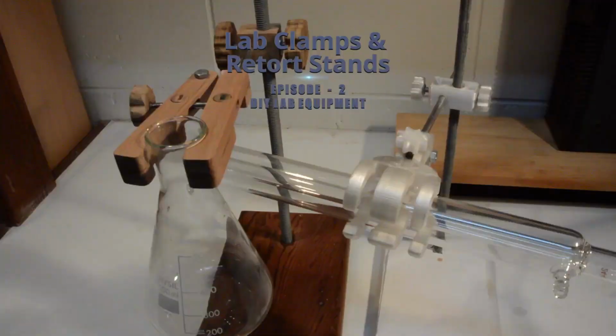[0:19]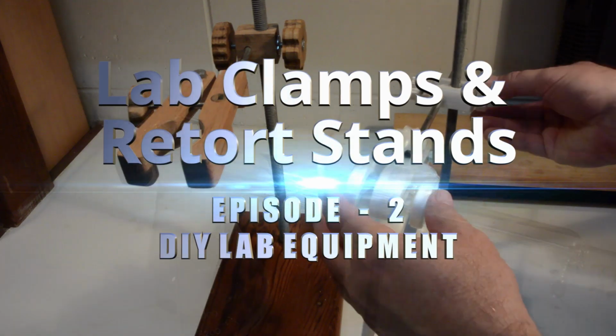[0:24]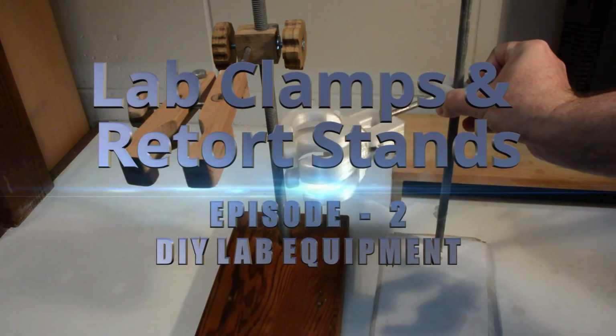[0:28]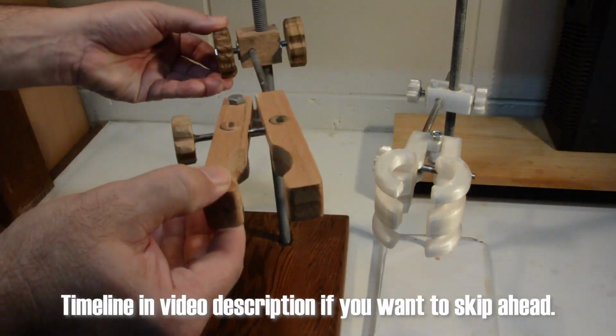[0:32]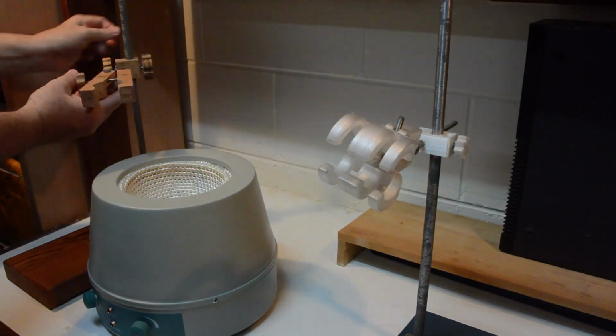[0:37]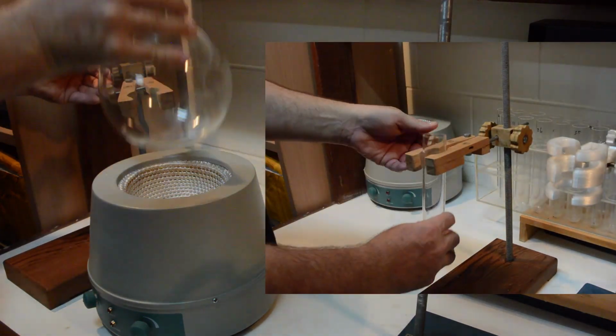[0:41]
Welcome to episode 2 of a series about DIY equipment for home chemistry labs, which is designing and making retort stands with boss heads and clamps, including both 3D printed and wooden versions. Retort stands and clamps are crucial pieces of equipment when doing procedures such as distillations, or in general for holding glassware in place while performing chemical reactions.
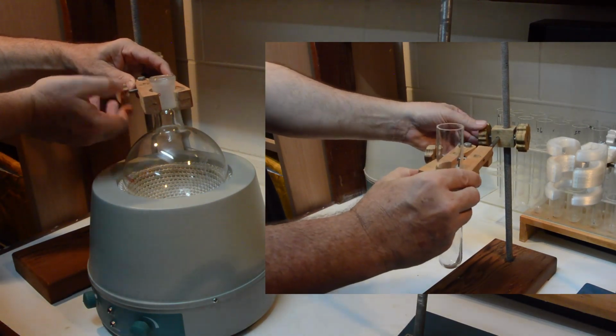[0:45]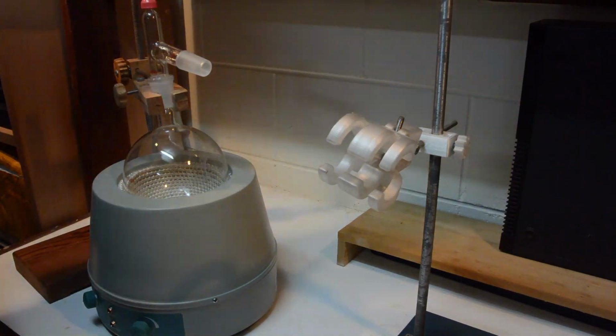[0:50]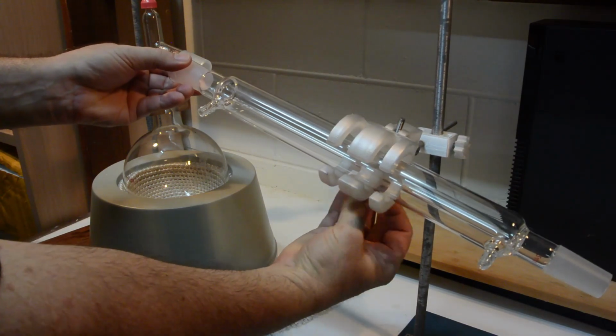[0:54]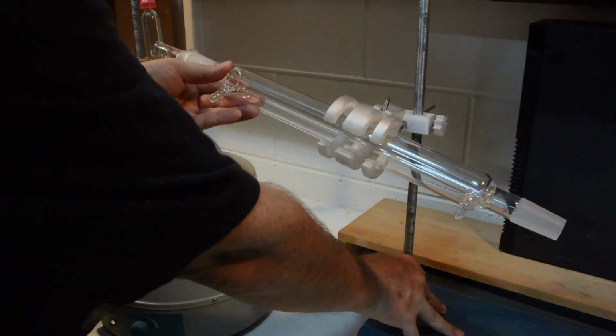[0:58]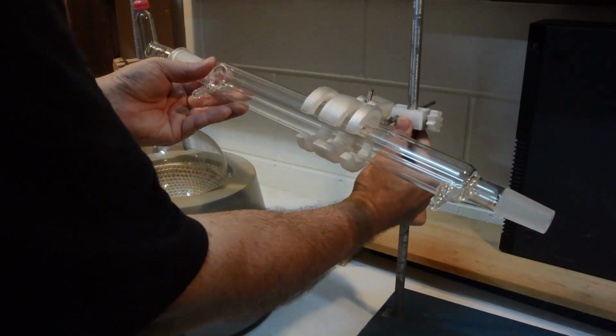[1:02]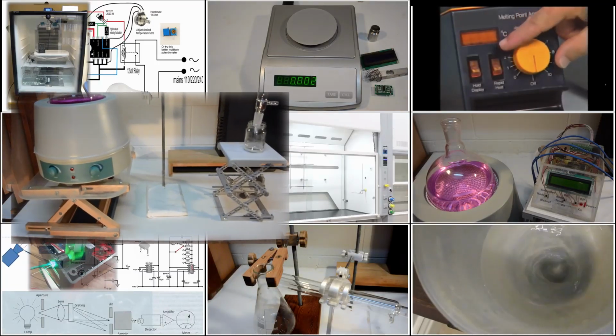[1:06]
There are both 3D printed versions and a version made from wood, which simply requires a handsaw and drill for those without access to a 3D printer. The wooden version not only enables a robust lab clamp that can withstand elevated temperature, but also truly does enable a DIY lab clamp for just a few dollars, without the hidden need of hundreds of dollars or more in tools.
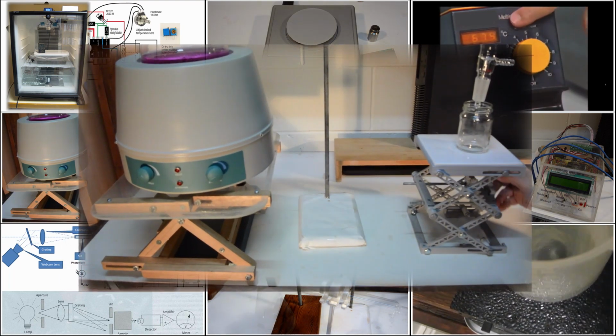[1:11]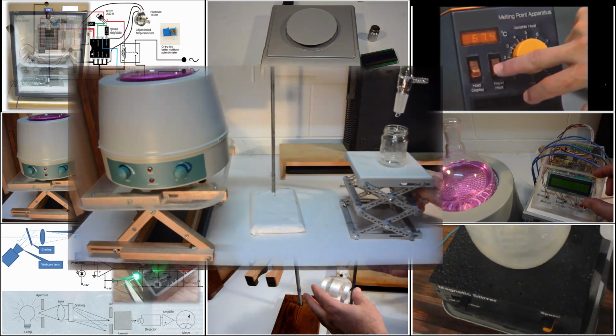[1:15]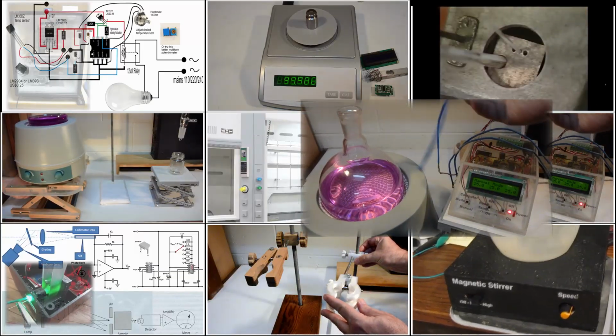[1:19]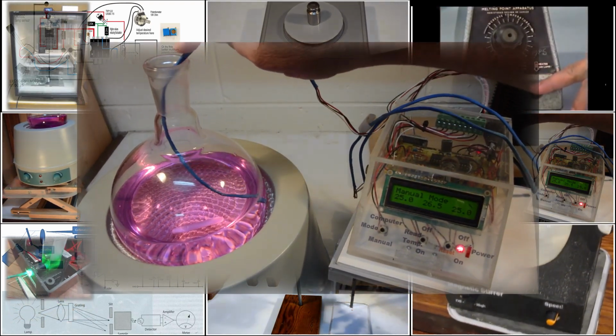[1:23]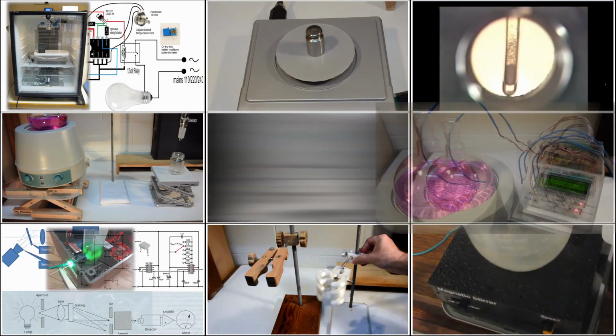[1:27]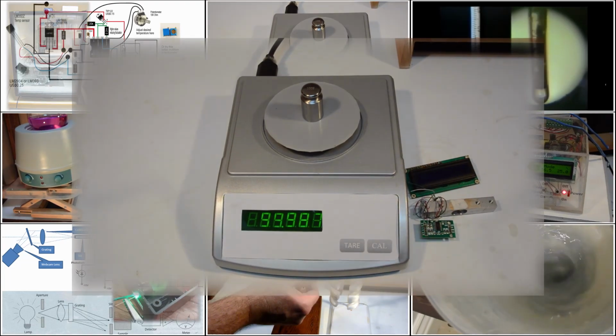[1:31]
As I said, this is the second in a series documenting the design and making of various homemade lab equipment. The first episode shows the design and making of a lab scissor jack, the link is in the description below, but also a number of other items have already been completed, such as a digital thermometer with up to 8 simultaneous sensors, Bluetooth controlled and recording via an Android phone app, and a digital balance made from readily available and inexpensive parts.
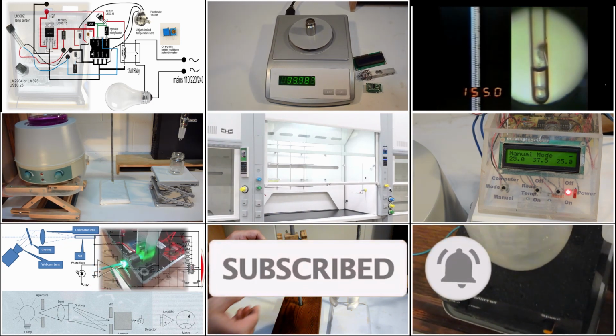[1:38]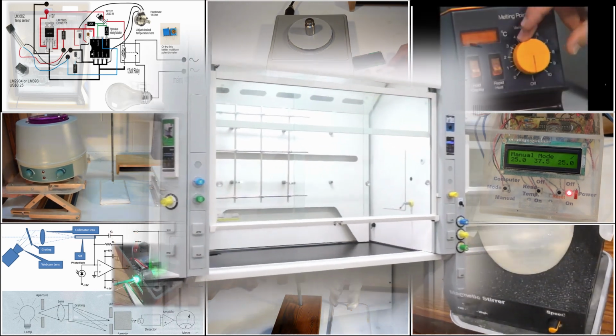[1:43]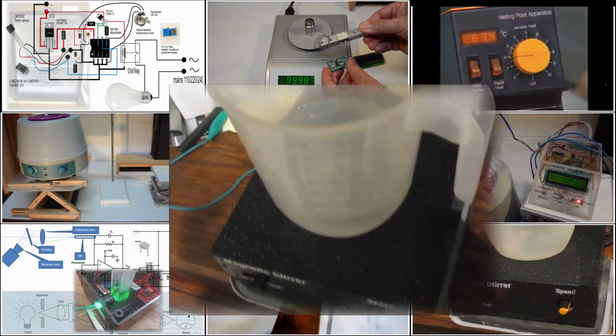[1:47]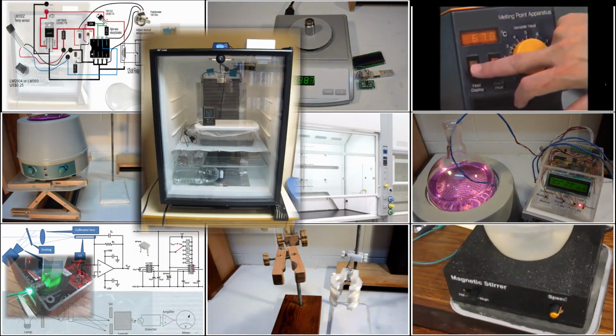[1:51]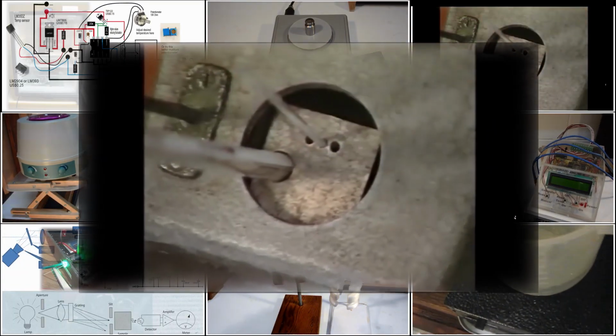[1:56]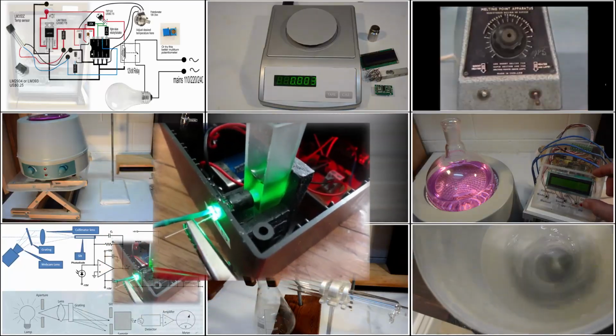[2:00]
Other planned DIY equipment include a fume cupboard, which is an essential safety item, a magnetic stirrer from salvaged parts from a broken desktop computer and discarded washing machine, a temperature-controlled incubator for microbiological experiments, a melting point apparatus to help identify synthesized chemicals, and continuing the theme of quantification, a DIY spectrophotometer for colorimetry and spectrometry.
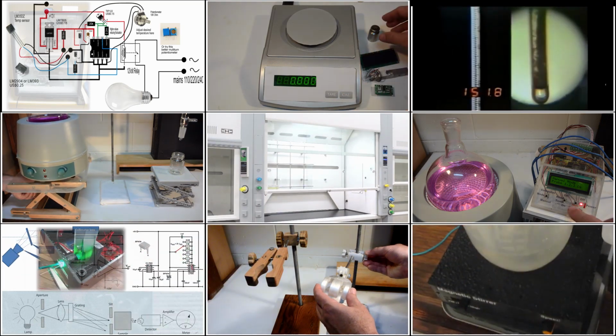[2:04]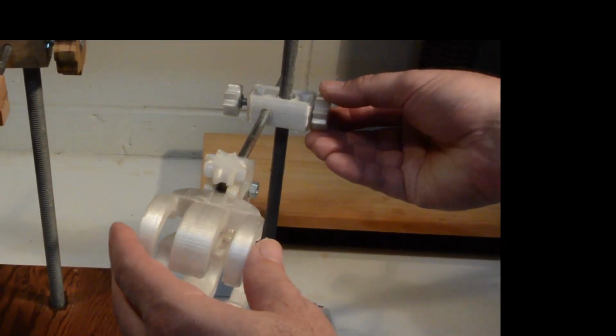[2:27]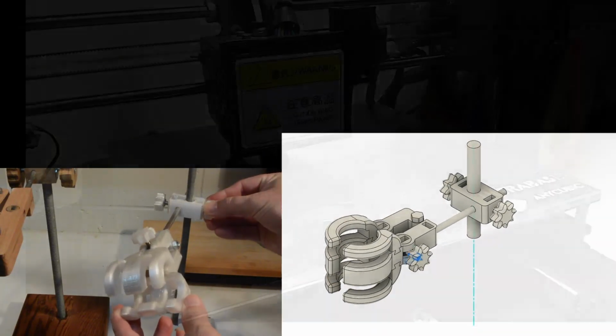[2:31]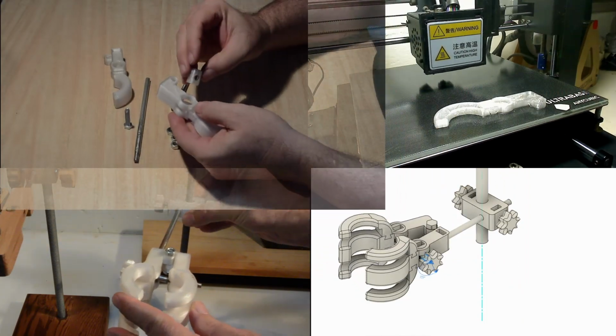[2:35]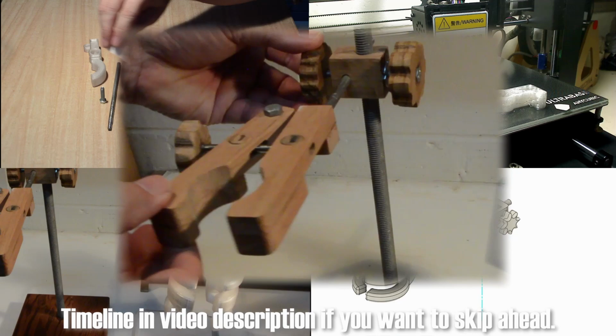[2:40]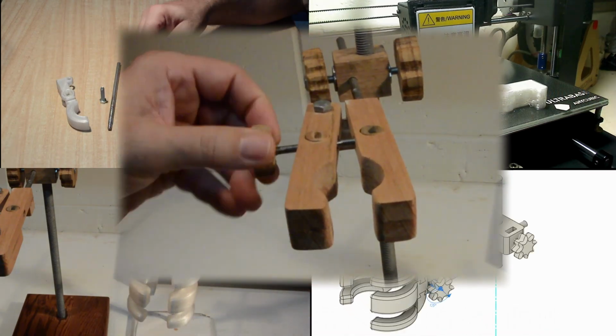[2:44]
Starting with the 3D printed version of the lab clamp, I will briefly go through the Fusion 360 design, then the 3D printing and settings used, and finally the assembly of the parts. A further section details the wooden version, which both shows how to make a functional lab clamp without needing a relatively expensive 3D printer, but which also is capable of handling elevated temperatures.
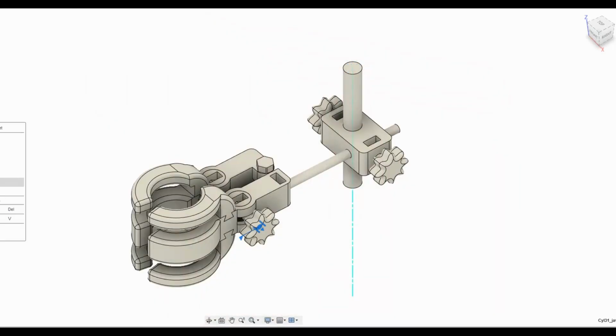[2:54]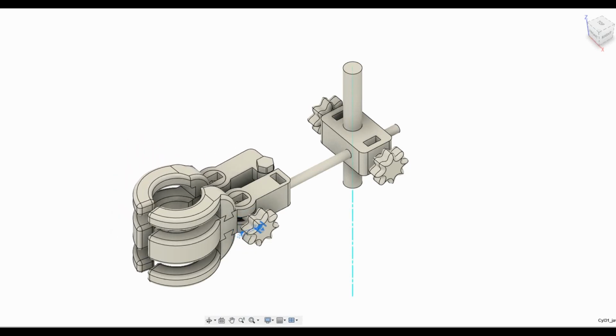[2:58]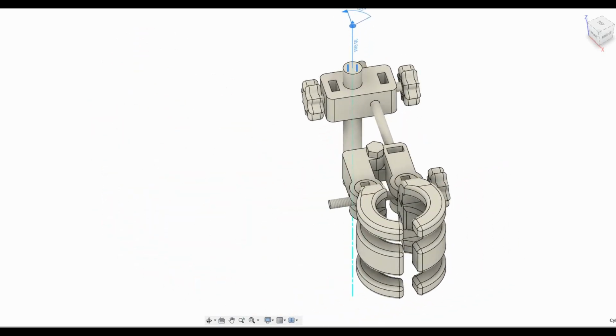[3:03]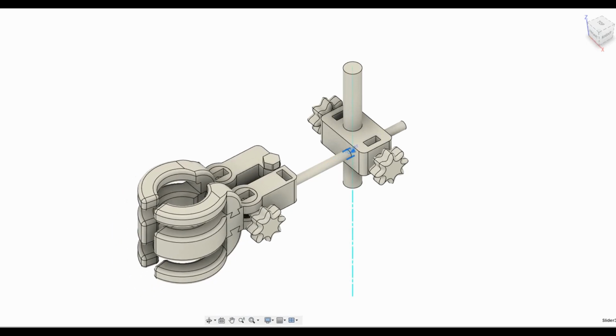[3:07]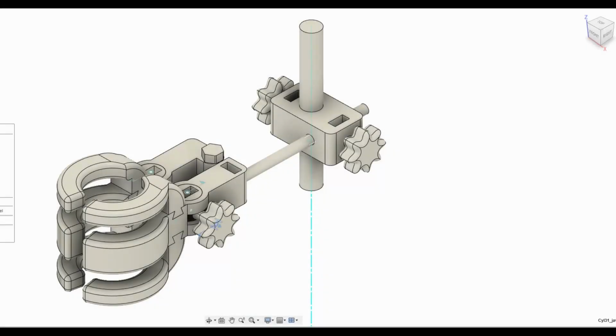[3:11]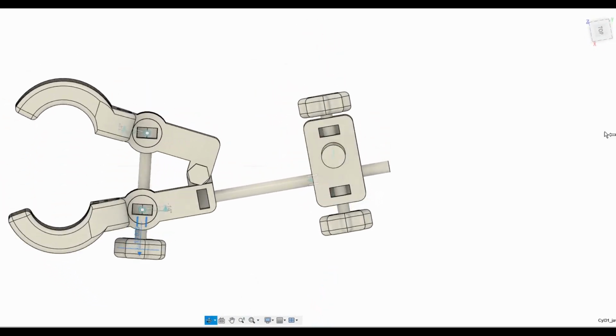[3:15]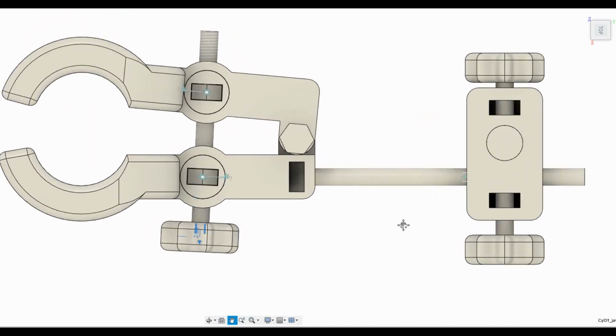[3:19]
A lab clamp is relatively simple. It is just a set of jaws that can open and close, with additional movement in two axes, up and down and swiveling around the retort stand, together with the ability to be positioned closer into or out from the retort stand itself. However, one of the complicating factors is that the axis of the adjustment screw which controls opening of the jaws changes angle with respect to the jaws when the position of the jaws is altered.
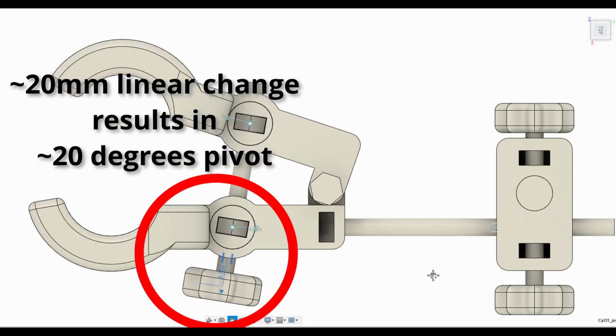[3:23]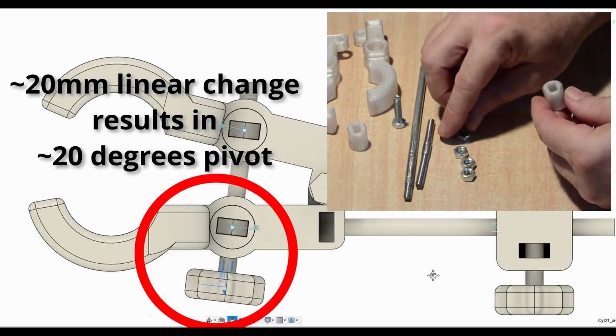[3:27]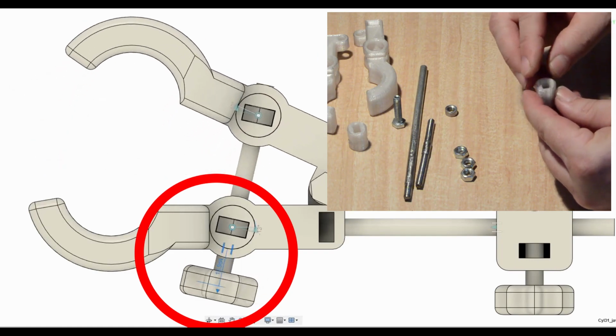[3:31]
This means that the retaining nuts of the jaw position adjustment screw need to pivot. These pivoting components are just cylinders into which a hex nut can be inserted, which adds strength and stops wear over time, as opposed to using the plastic material itself for the thread.
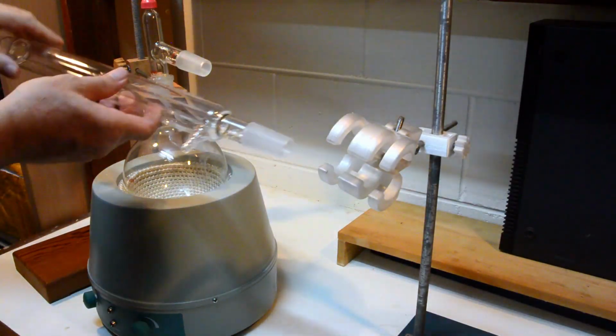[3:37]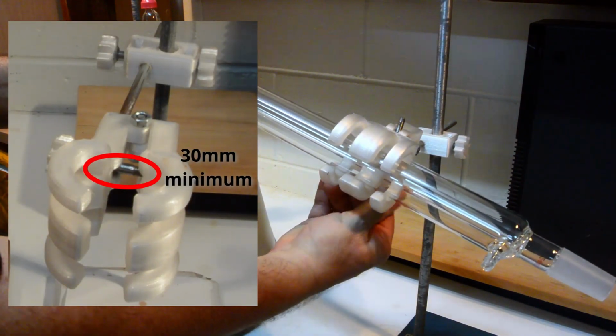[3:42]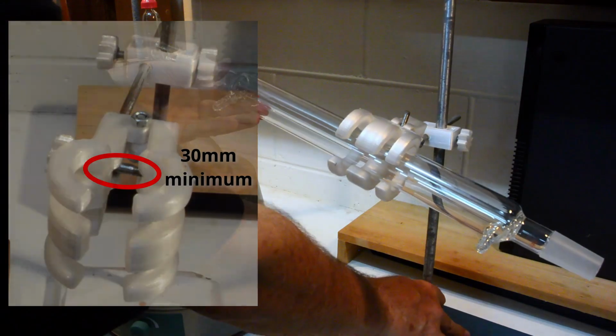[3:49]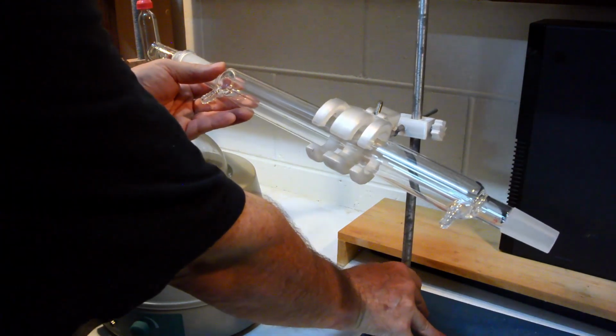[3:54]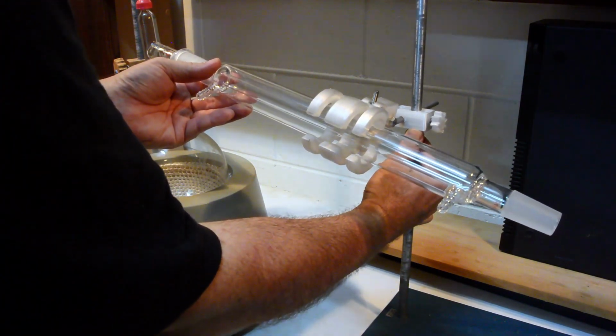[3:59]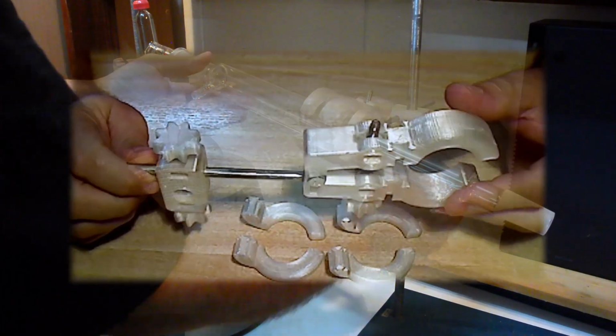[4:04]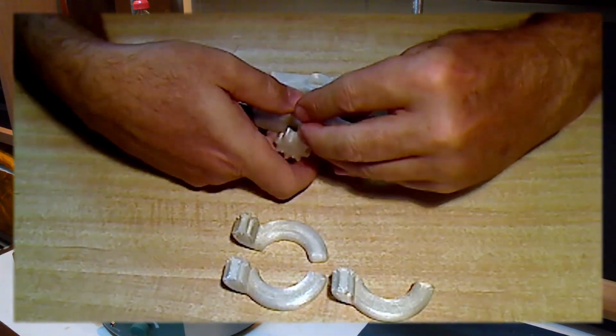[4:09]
The circular section of the jaw is dimensioned to accommodate the condensers of my distillation equipment, which are about 40mm in diameter. This size is also convenient for the typical neck size of flasks and test tubes, etc. The wider sides of the jaws mean the greater the contact area with the item being held, and less local stresses imposed, particularly for long equipment such as condensers. However, very wide jaws would limit the clamp with respect to items with short necks such as flasks. So the jaws are designed to have extensions that can be mounted and removed as necessary using dovetail joints.
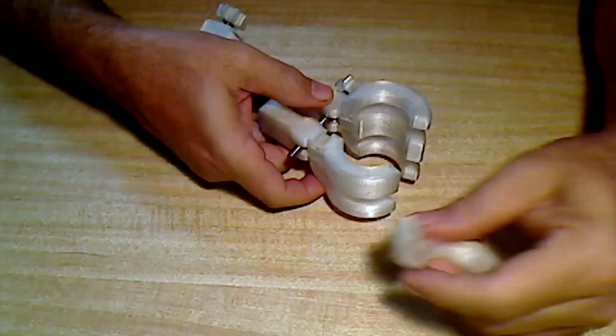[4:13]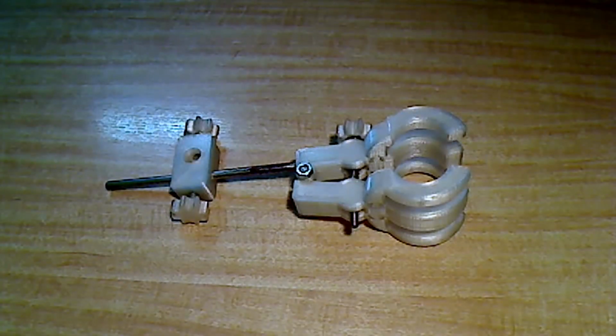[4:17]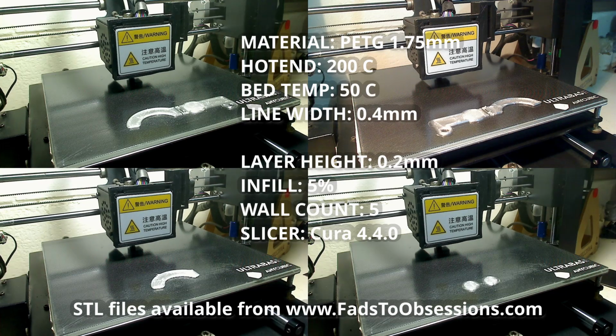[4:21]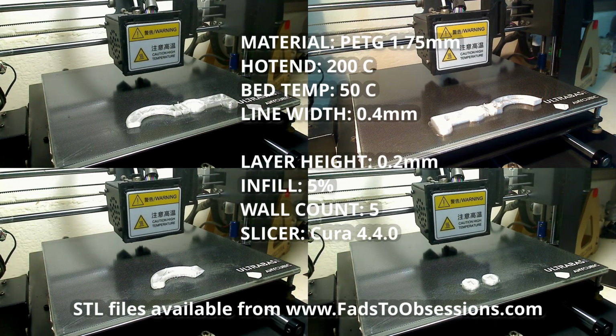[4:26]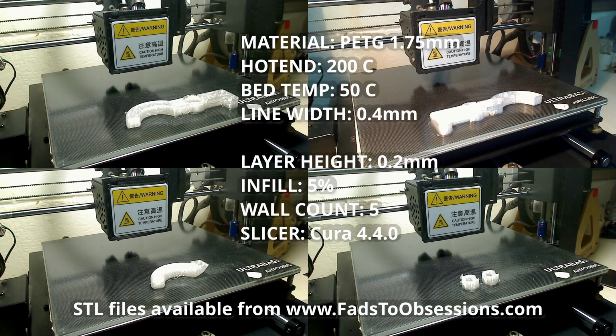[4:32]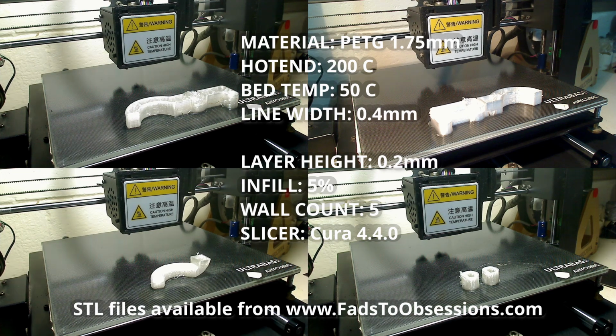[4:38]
Here are some time-lapse videos showing the various components being printed, with the relevant 3D printer and slicer software settings given as annotations. I used PETG rather than PLA, as the physical strength is higher with PETG, and PETG can handle higher temperatures, typically 75 degrees Celsius compared to PLA, which generally needs to be kept below 55 degrees Celsius unless it deforms. The various STL files are available from my website.
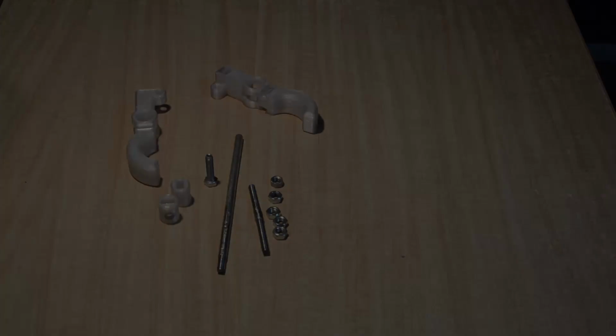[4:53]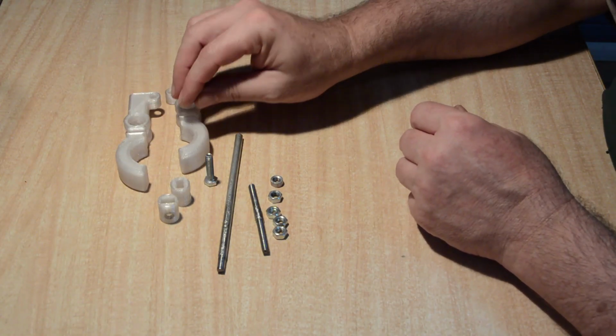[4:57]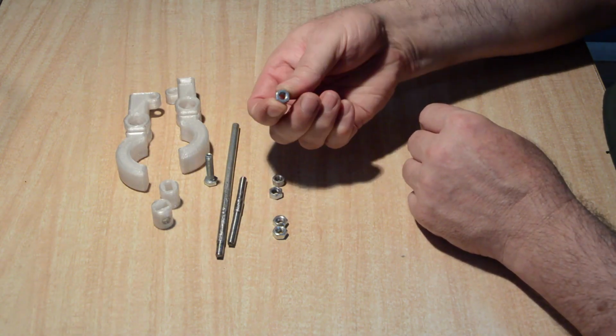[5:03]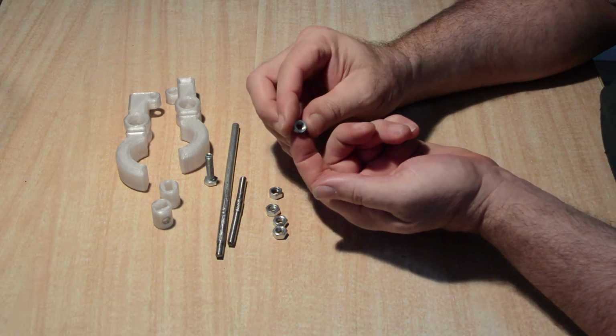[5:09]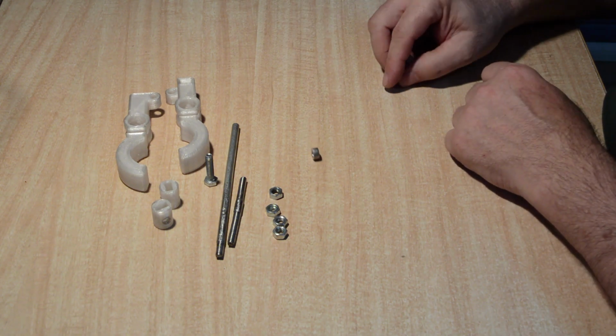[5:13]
After you have printed the various pieces, at a minimum you will need the left and right jaws and also two copies of the swivel joint. You will also need some 6mm threaded rod and a few corresponding nuts, one of which is filed smooth on the outside so that it is circular. It is important that this can rotate in its eventual slot, so when it rolls smoothly you have it right.
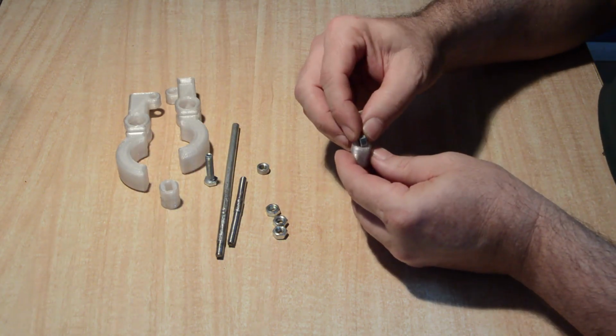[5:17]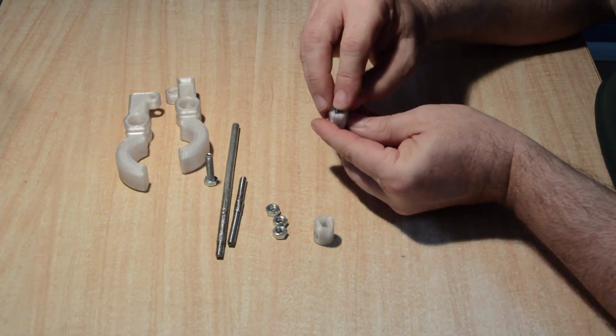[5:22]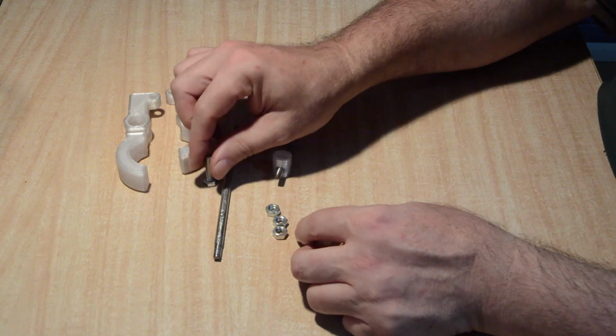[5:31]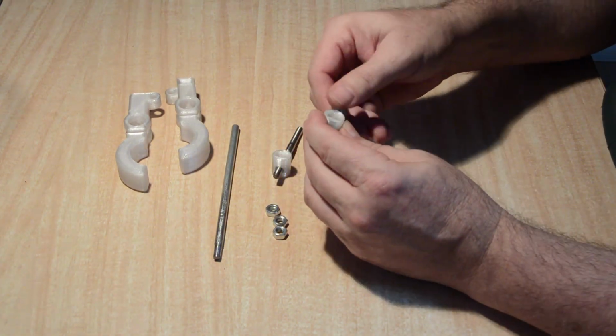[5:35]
Starting with the swivel joints, insert a hex nut into one of the cylindrical pieces, which will be in the moving jaw, and the filed smooth hex nut into the other cylindrical piece. This will be in the fixed jaw. The filed smooth hex nut should rotate freely within its cylindrical piece, while the normal hex nut should not rotate, and its cylindrical piece move as a whole with the nut.
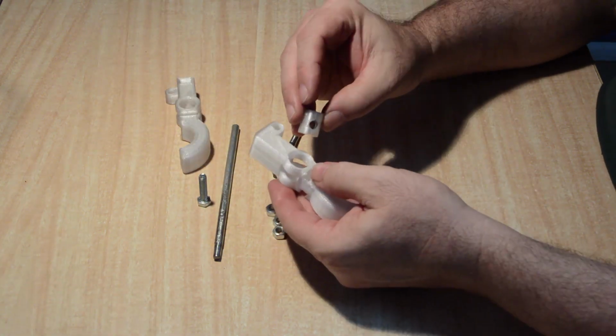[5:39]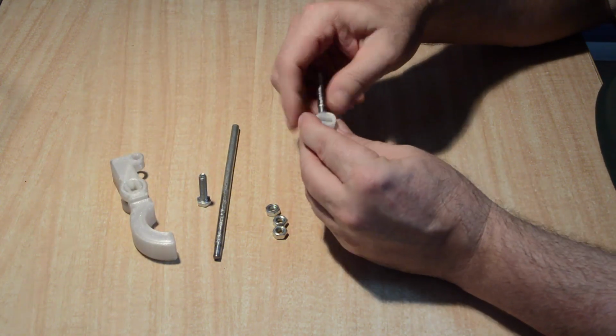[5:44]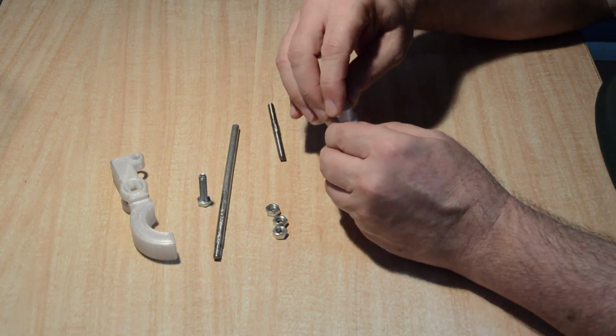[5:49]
Insert the cylindrical piece with the normal hex nut into the left-hand jaw, and then the other cylindrical piece into the right-hand jaw. Make sure that the nuts face outward, and that the threads can be seen through the slots in the side of the jaw components.
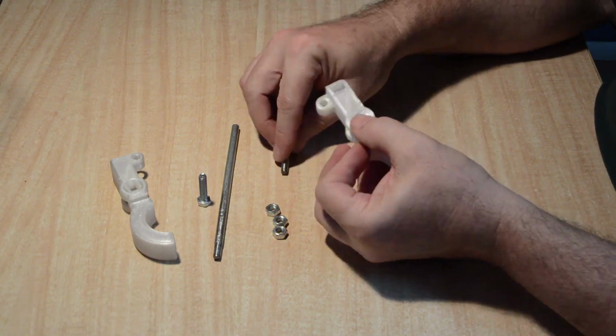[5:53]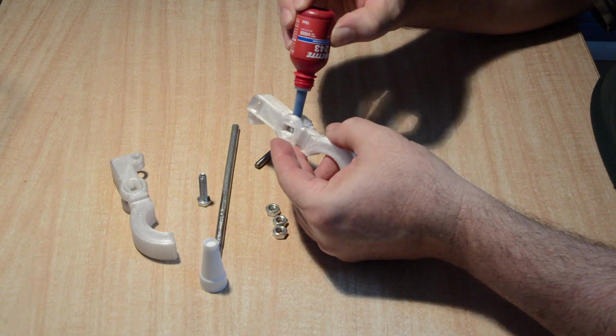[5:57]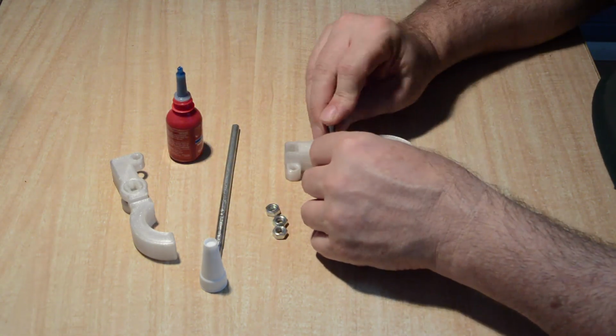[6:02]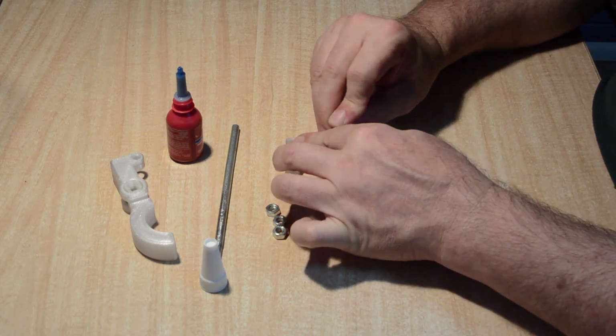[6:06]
Insert the piece of threaded rod that will form the jaw adjustment screw into the right-hand jaw, the one with the hex nut that was filed smooth. Use some Loctite glue or similar, so that the threaded rod will be fixed to the nut. Thread the nut through far enough so that the knob can be later attached.
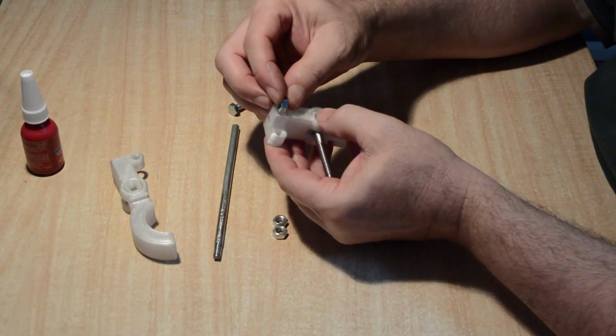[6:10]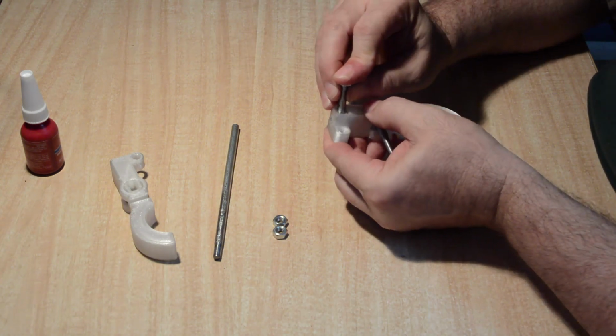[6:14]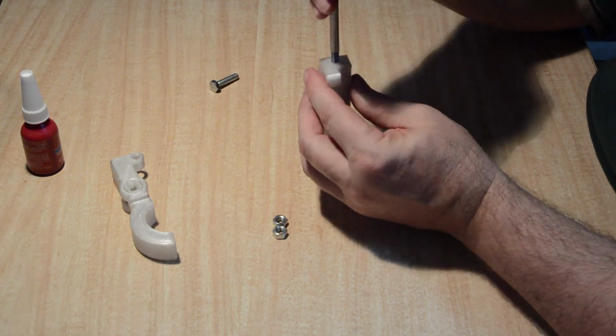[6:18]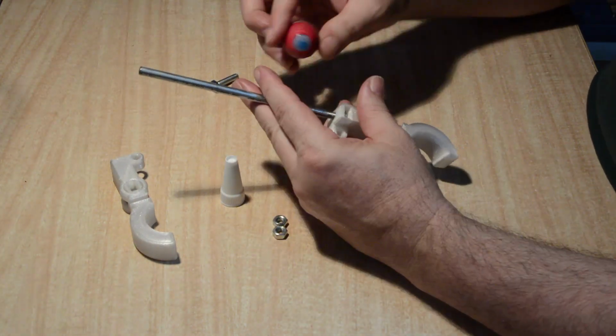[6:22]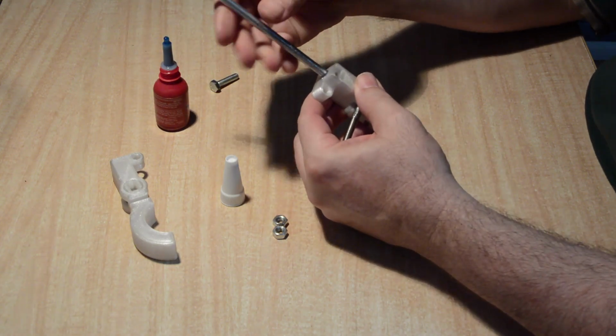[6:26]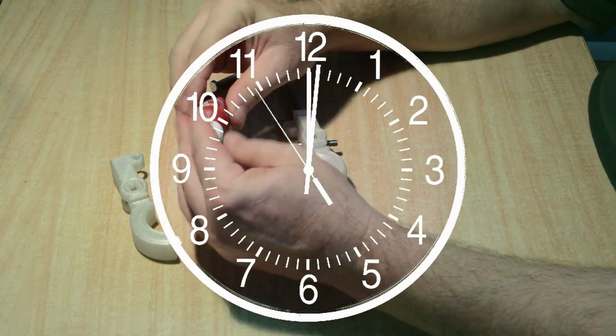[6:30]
Then insert another hex nut into the slot at the rear of the right-hand jaw. This is to provide an attachment point for the rod that will enable the jaw assembly to be moved closer or further away from the retort stand. A hex nut is used as this allows a more robust attachment to the 3D printed plastic part, rather than just using the plastic itself for the thread. Okay, then next need to wait for the Loctite glue to set.
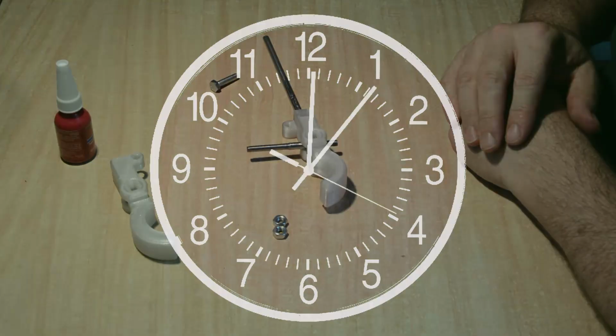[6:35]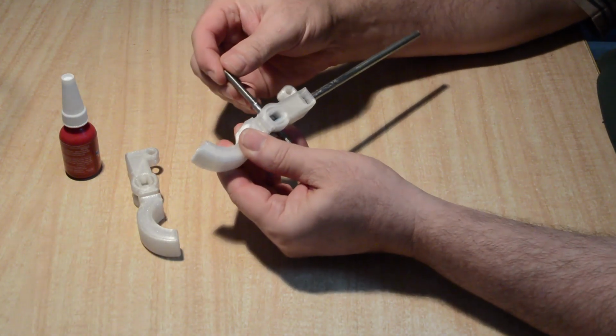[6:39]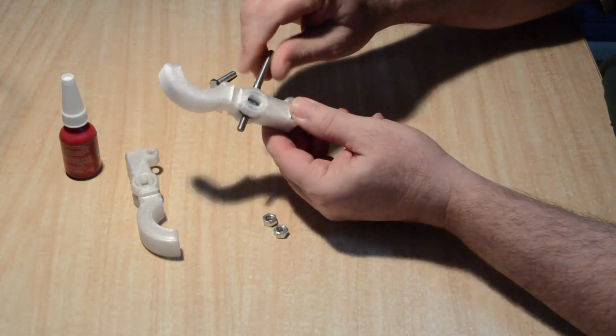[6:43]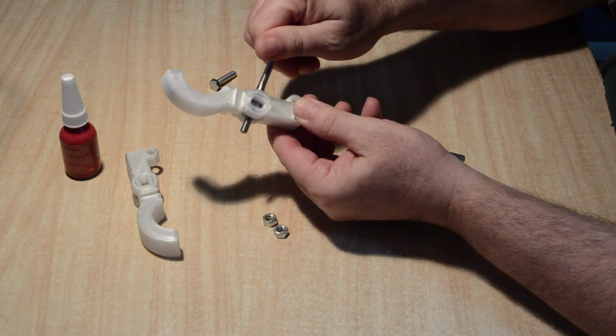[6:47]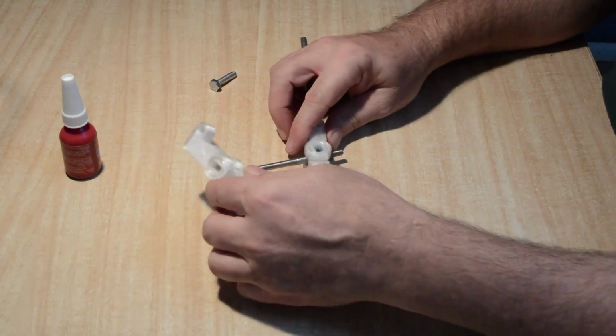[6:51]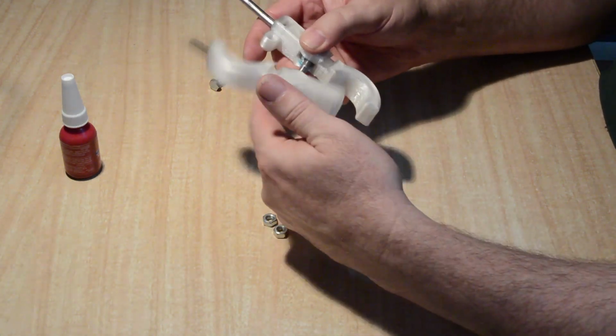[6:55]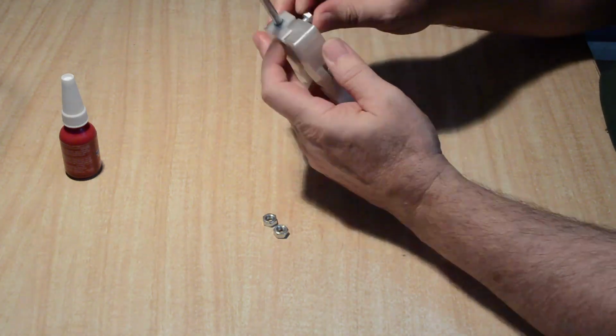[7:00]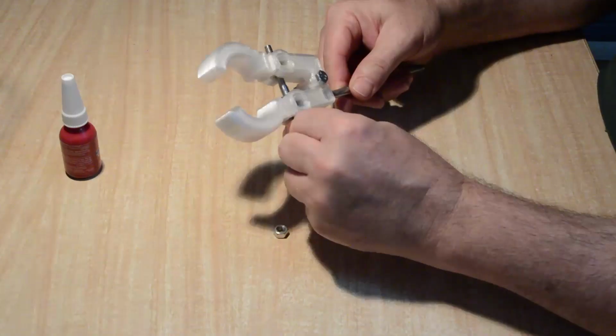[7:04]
Once the glue is set, check that the threaded rod that forms the jaw adjustment screw moves freely, and that the swivel moves back and forth, but the nut should not move up or down the thread, just spin in place with the threaded rod. Then need to thread the other end of the rod through the hex nut on the other jaw. Continue threading the jaw onto the rod until the hinge point at the rear of the jaws align. Then insert the 30mm bolt into the hinge and secure with a nut. The adjustment screw should now open and close the jaws.
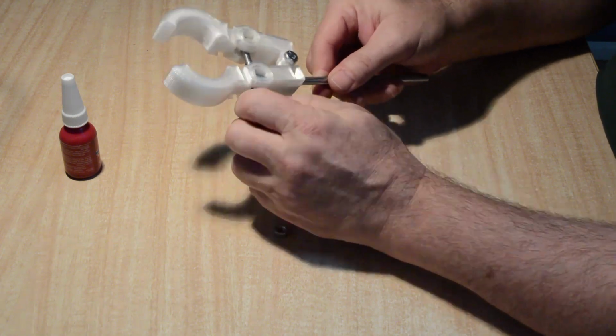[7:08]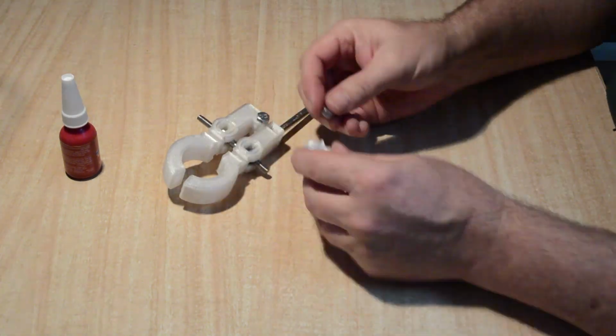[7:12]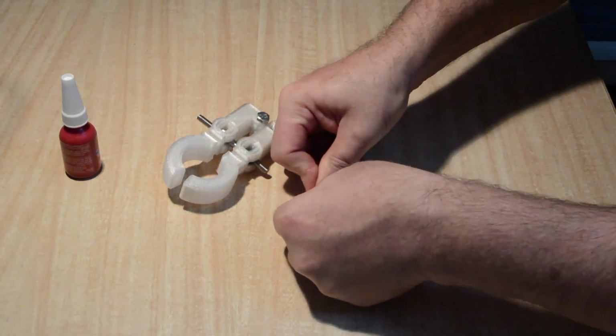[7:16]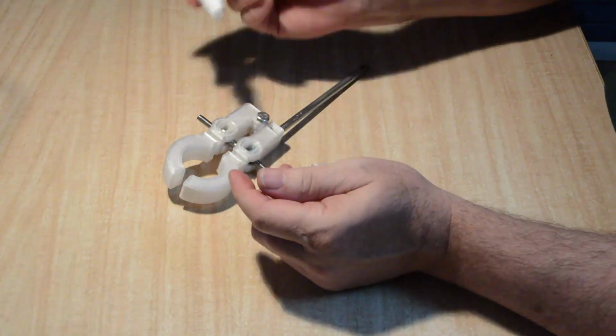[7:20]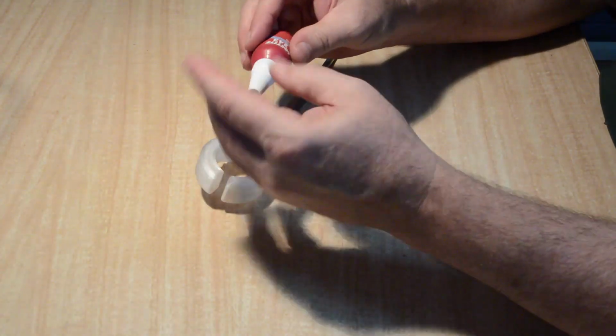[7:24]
Insert a hex nut into the knob. Again, a hex nut is used to give a more robust attachment, rather than just using the plastic for the thread. And finally, with some Loctite or similar glue, fasten the knob onto the threaded rod to finish the adjustment screw.
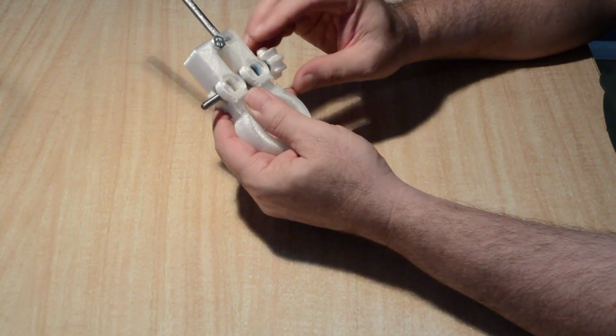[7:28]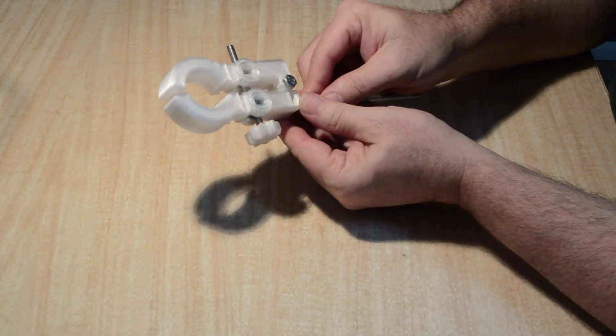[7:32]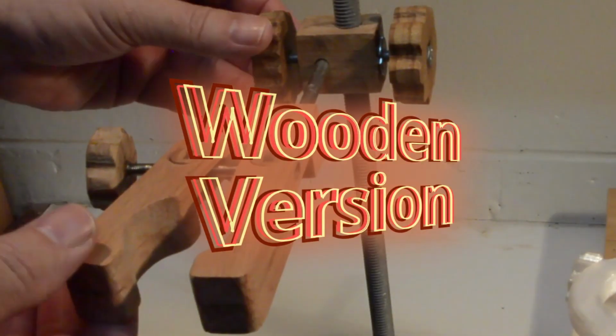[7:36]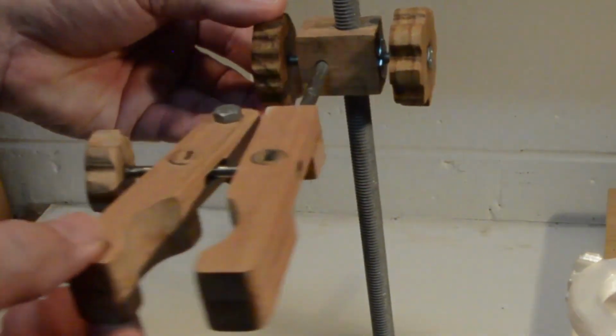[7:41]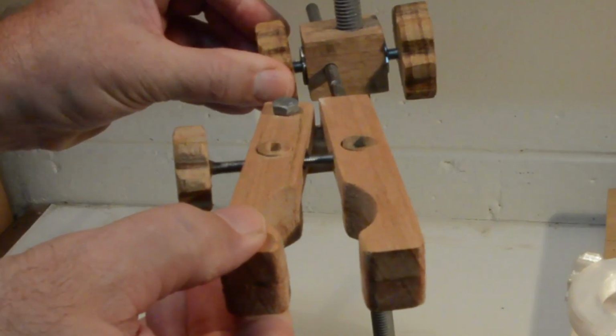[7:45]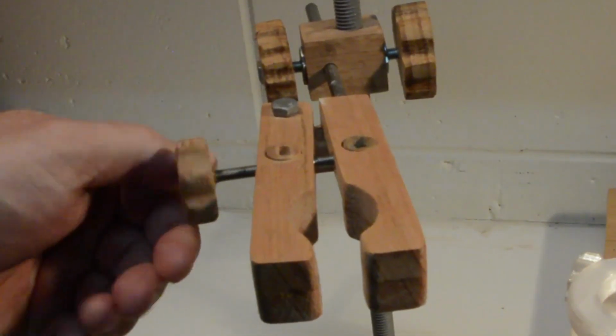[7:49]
The wooden version of the lab clamp, which simply requires a handsaw and drill, is for those without access to a 3D printer. The wooden version not only enables a robust lab clamp that can withstand elevated temperature, but which also truly does enable a DIY clamp for just a few dollars, without the hidden need of hundreds of dollars or more in tools and equipment.
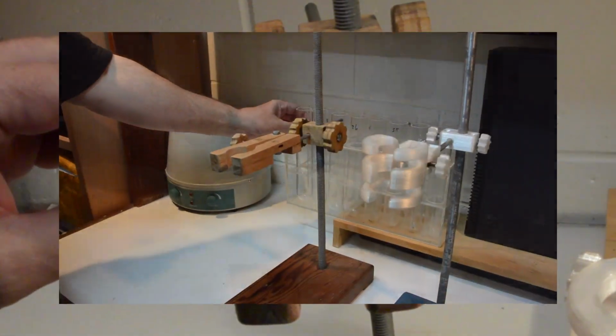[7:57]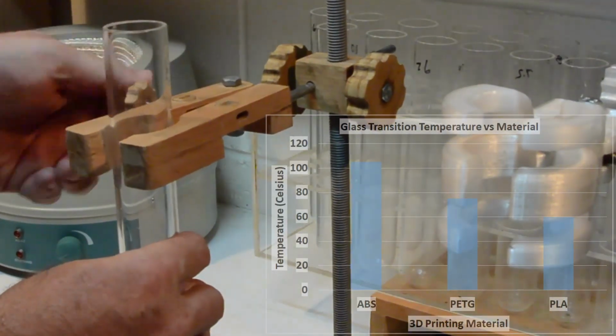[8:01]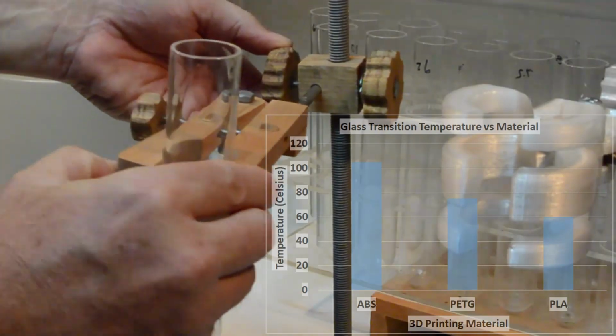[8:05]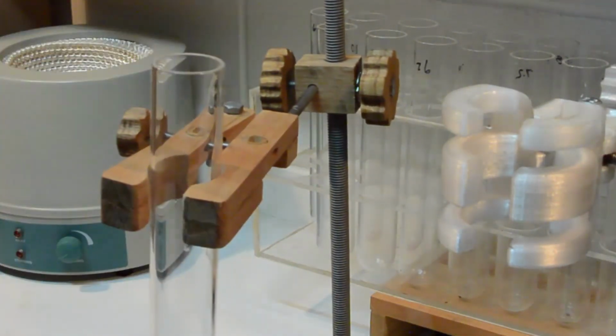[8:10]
Even though I recommend PETG for the 3D printed version, at temperatures of around 75 degrees Celsius, this material will begin to deform. So a wooden version of the lab clamp is also handy for situations in which equipment to be held is expected to be hotter than this.
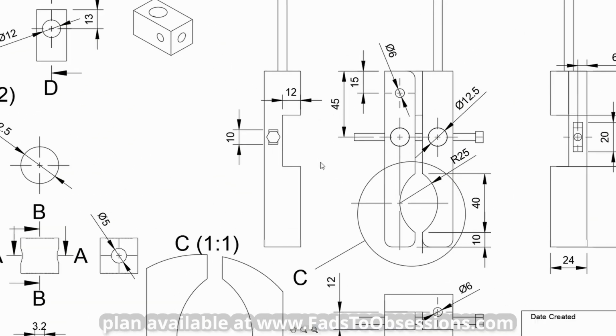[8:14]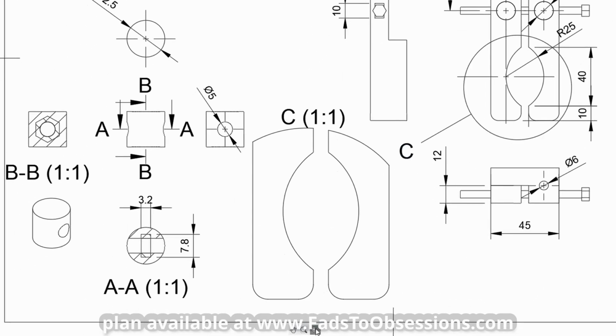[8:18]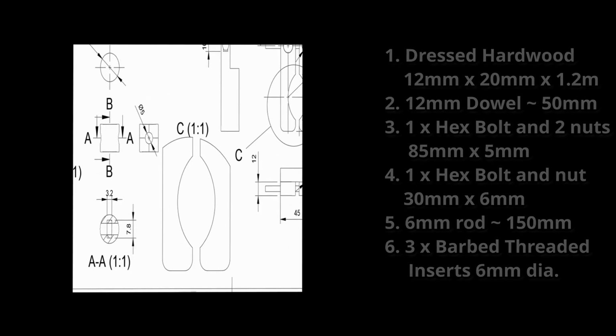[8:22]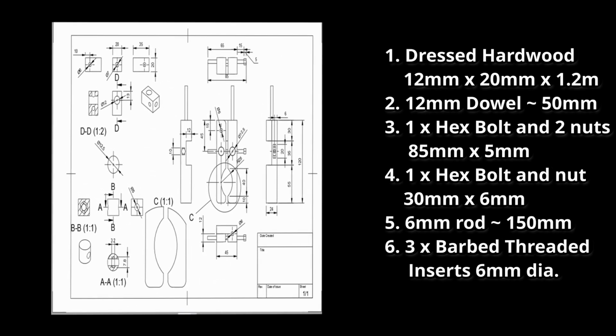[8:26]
The design was done in Fusion 360, which allows generating dimension drawings from which you can work out your cut list, etc. The hardware required and cut list is shown, and is based upon stock 20 by 12mm dressed hardwood available from my local hardware store. The various hex bolts and dowel, etc. are similarly standard and should be readily available.
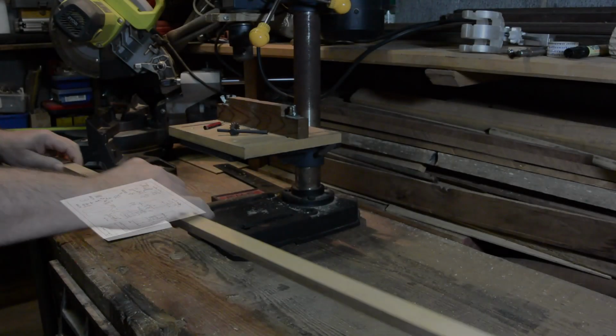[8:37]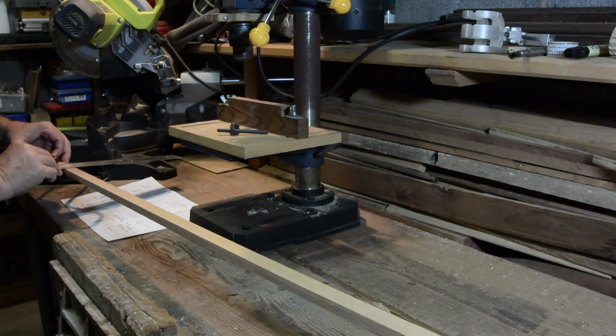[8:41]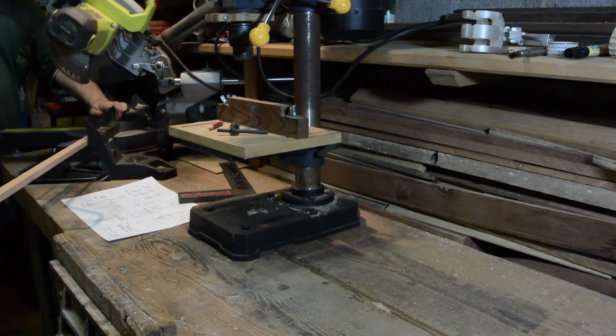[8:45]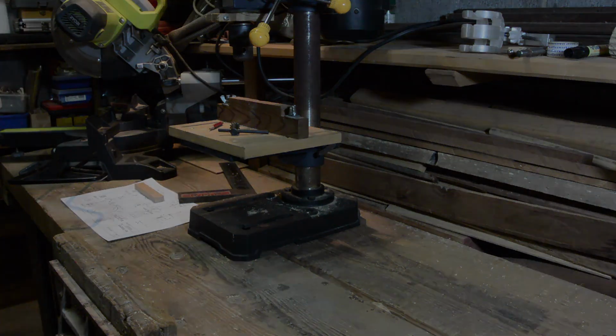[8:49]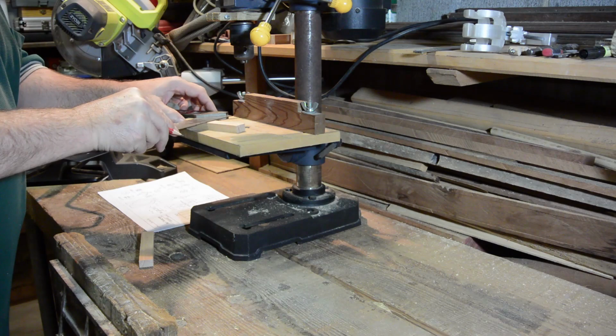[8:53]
The construction of the wooden lab clamp starts with cutting the various pieces of timber required to size. I have a crosscut saw, which makes things a little easier, but a handsaw would obviously do the job if you don't have access to power tools. Next is to measure and mark up the various pieces for drilling of the various necessary holes and slots. And then onto the actual drilling.
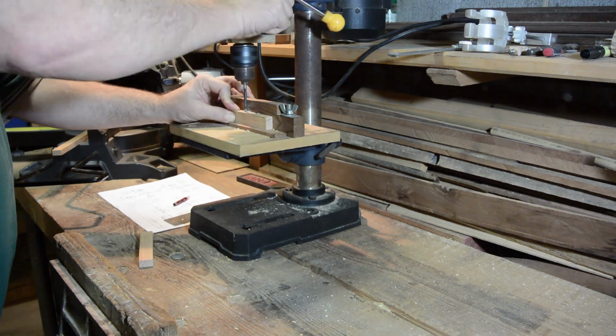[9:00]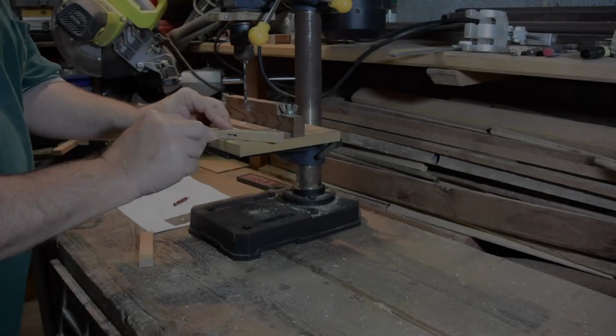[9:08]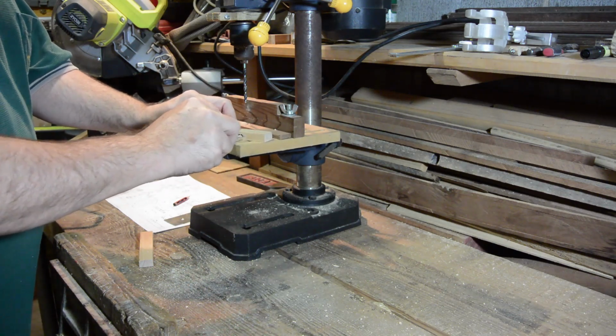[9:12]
I used a drill press, but this could be done with a hand drill, you just would need to take some extra care. After drilling holes to remove the majority of the material from the side slots, use a file to clean up and finish forming the slot through which the jaw adjustment screw will eventually fit.
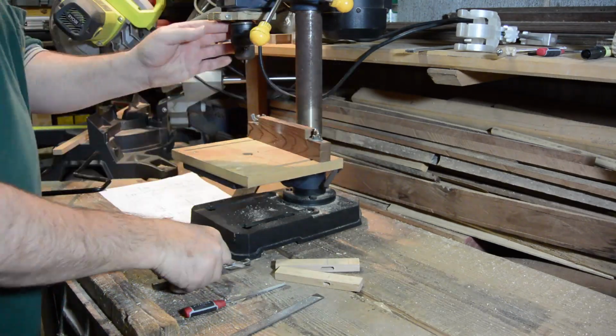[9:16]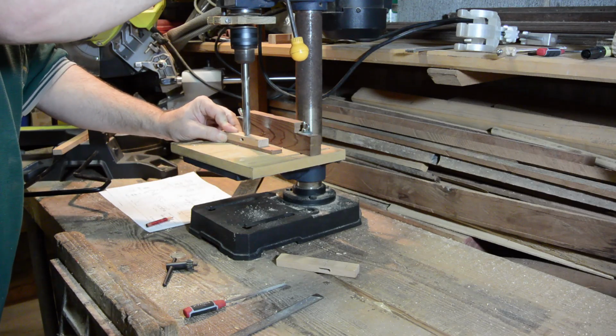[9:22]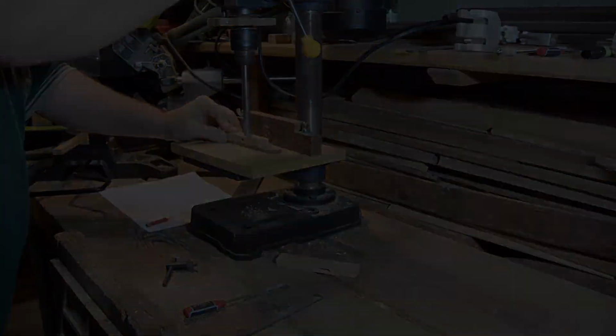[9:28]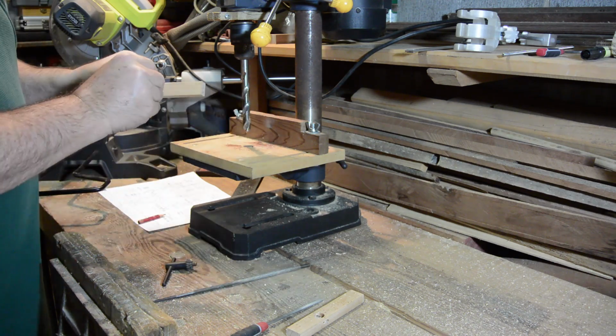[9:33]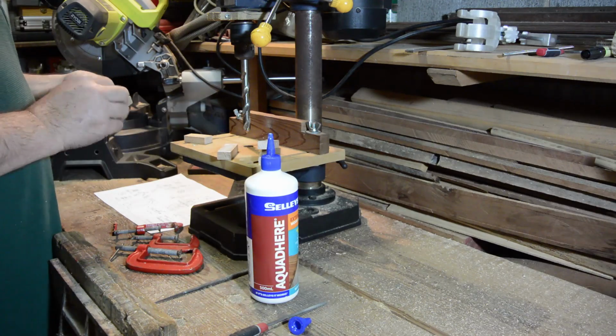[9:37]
Next, change drill bit to bore the vertical hole through the jaw piece in which the pivot joints will be housed. These vertical holes in the jaws need to be a tight fit with the 12mm dowel from which the pivot joints are made, so I drilled the hole a little undersize and then filed out the hole to snugly fit the dowel. With the various pieces cut and holes and slots drilled, the jaws can now be assembled, glued and clamped together, and then allowed to set overnight.
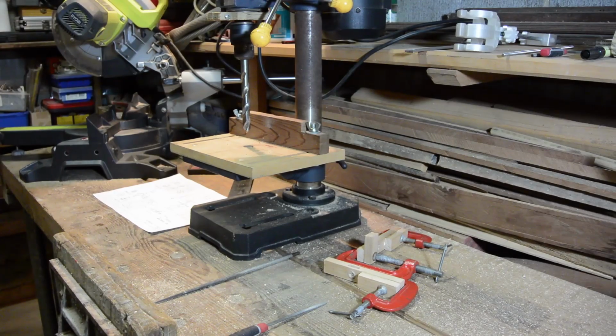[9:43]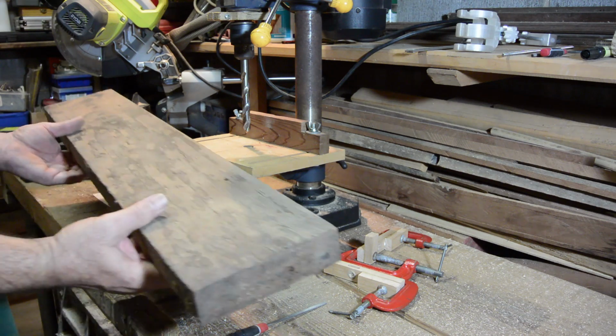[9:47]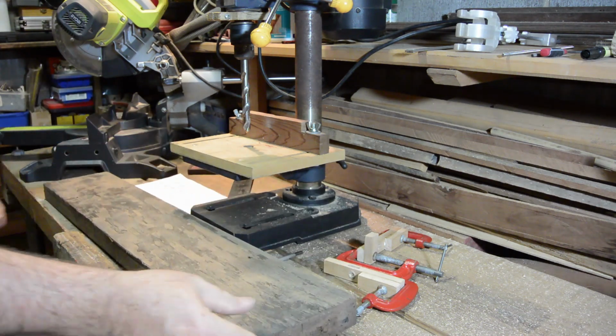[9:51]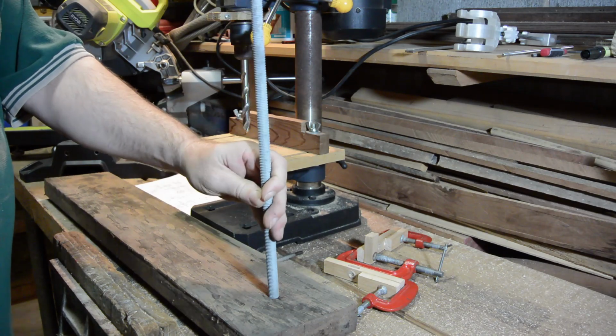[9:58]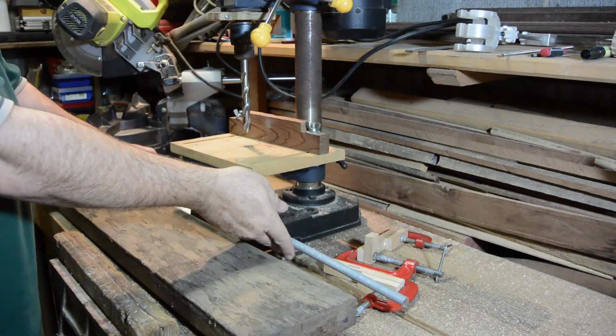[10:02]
While waiting for the glue on the jaw pieces to dry, started making a retort stand out of some scrap materials. A retort stand is simply a vertical rod fixed into a sturdy base, so your ingenuity and whatever materials you have on hand come into play. I happen to have some 12mm threaded steel rod left over from wall reinforcing and an old hardwood tread from a demolished stairwell.
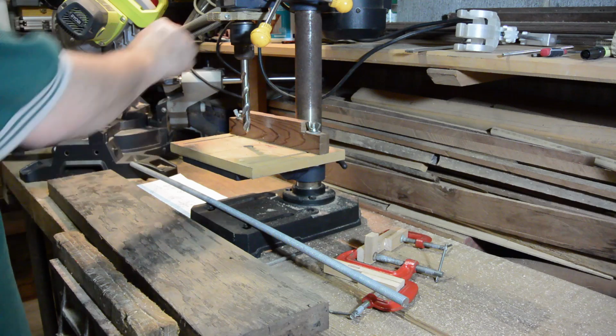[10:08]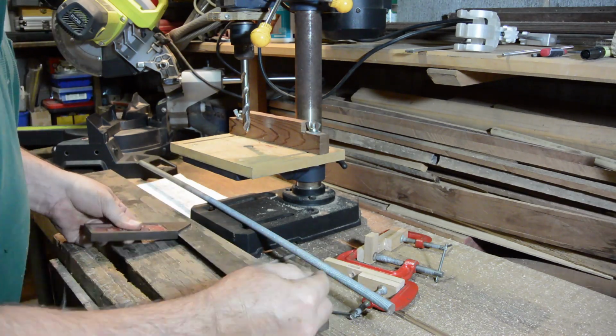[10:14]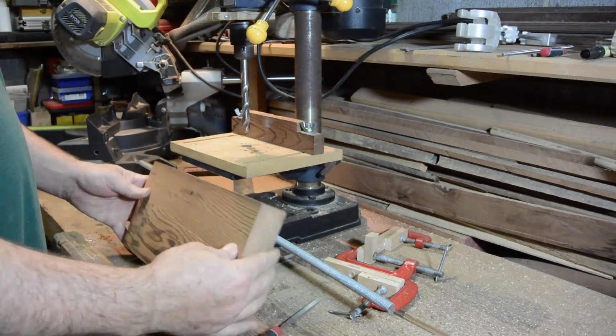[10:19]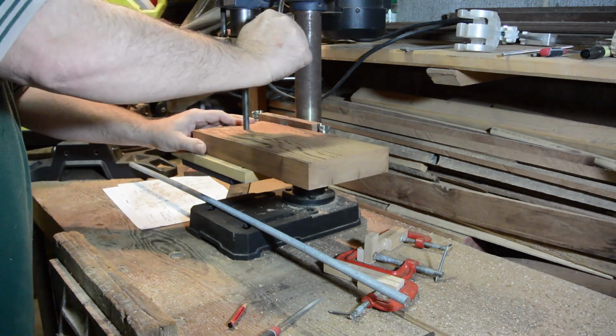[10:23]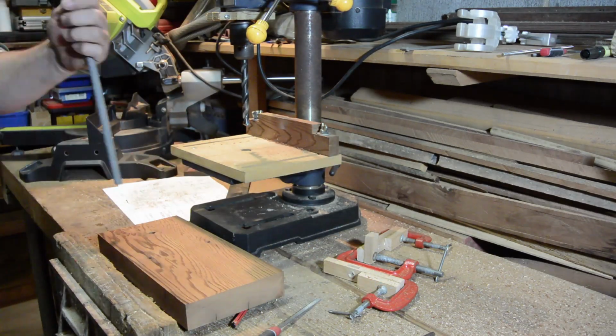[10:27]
So I cut and sanded a portion of the hardwood tread to make a base, arbitrarily made it 30 centimetres, about 12 inches long. You want the base to be long and wide enough to be stable, but kept to a minimum to avoid difficulty with benchtop footprint. Drilled an appropriate hole for the threaded rod, inserted the rod, and as simple as that, a perfectly functional retort stand.
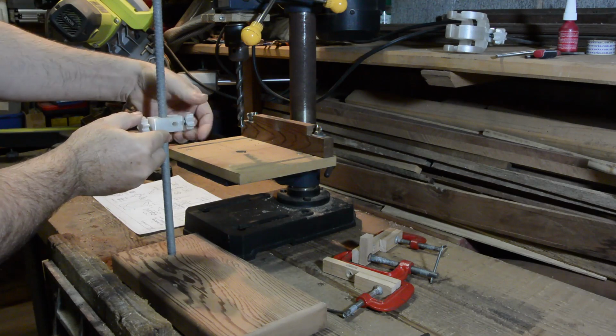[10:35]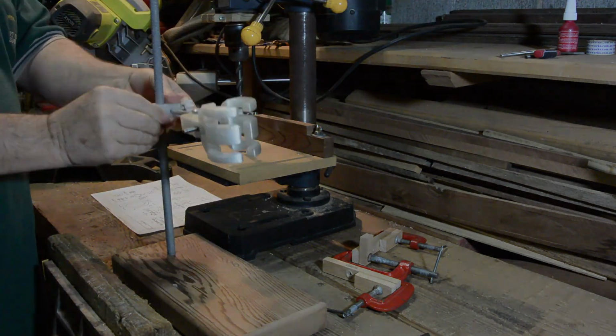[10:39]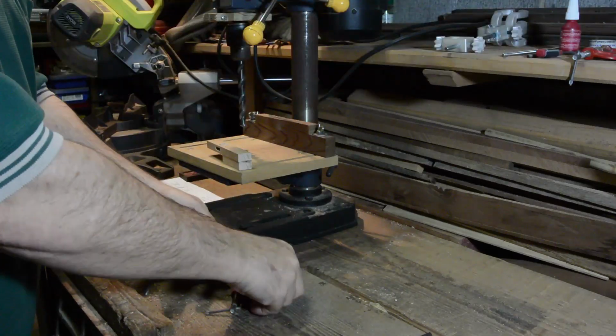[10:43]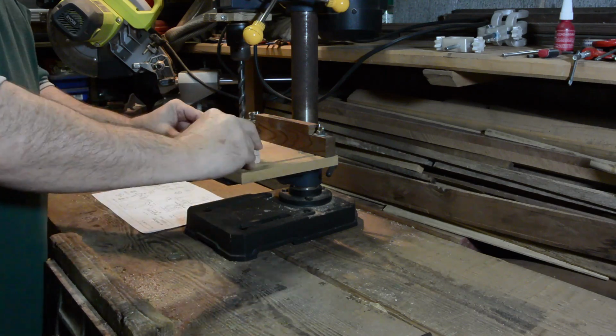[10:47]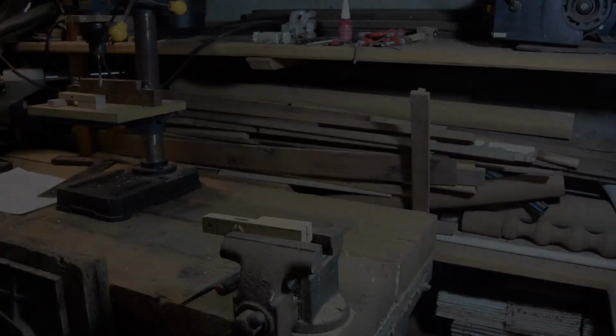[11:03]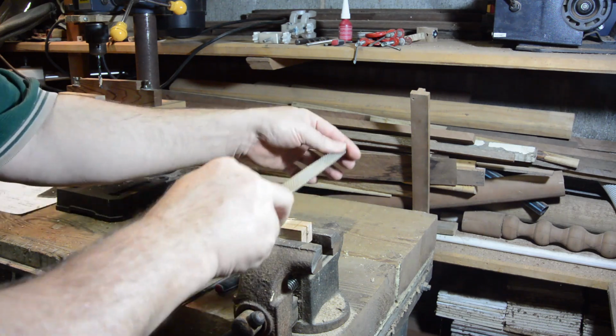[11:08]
After the glue had dried on the pieces making the clamp jaws, time to align the pieces and drill the hole for the rear hinge. After marking out the location of the mouth of the jaws, I remove the material using a rasp.
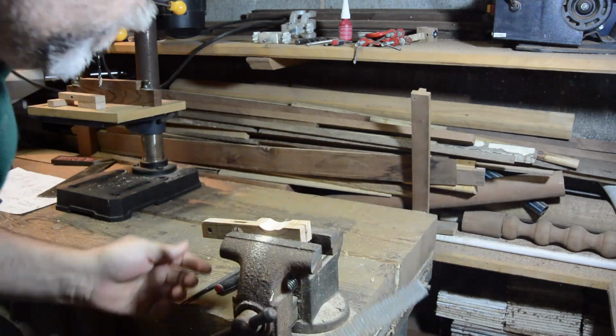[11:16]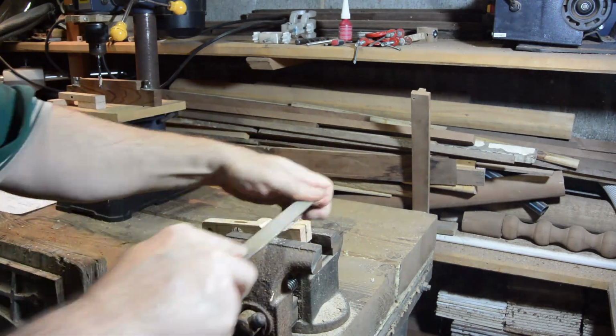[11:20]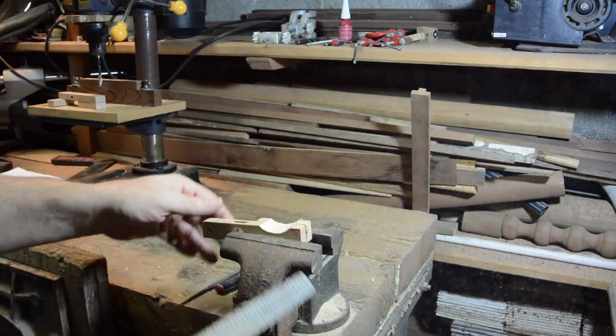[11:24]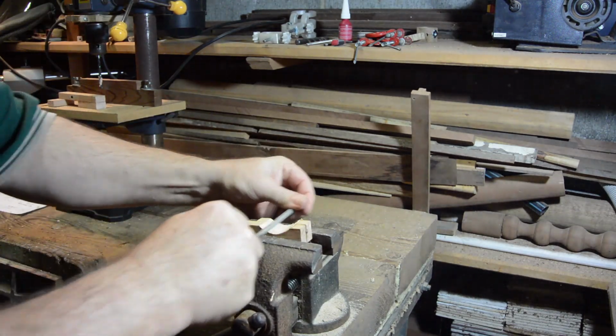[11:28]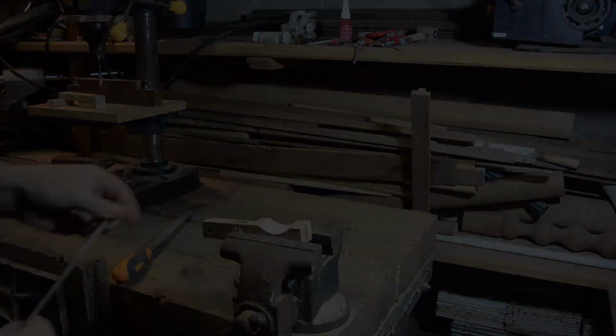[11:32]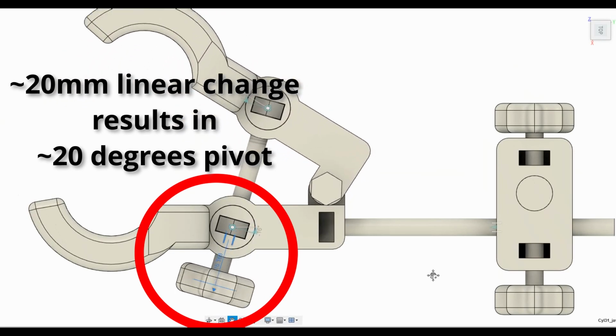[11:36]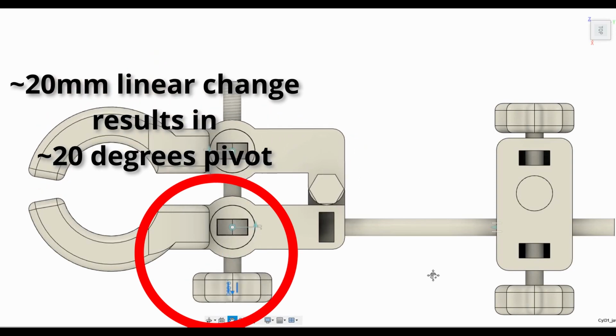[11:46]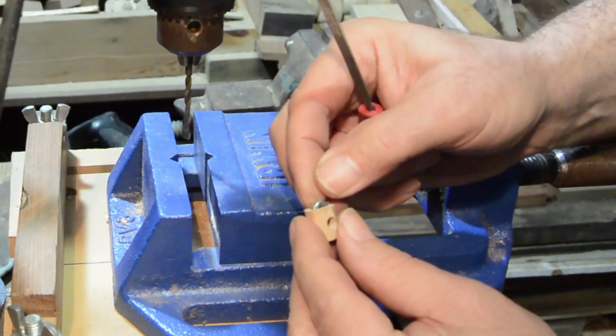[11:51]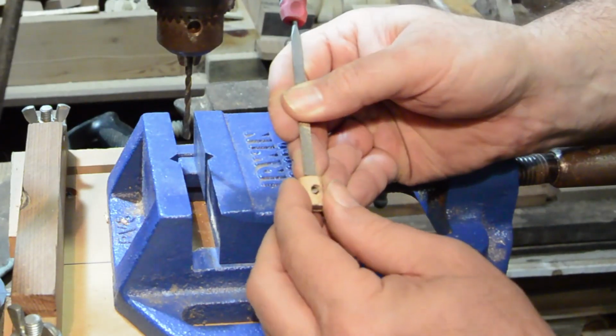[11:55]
Similarly, as with the 3D printed version of the lab clamp, one of the complicating factors is that the axis of the adjustment screw which controls opening of the jaws changes angle with respect to the jaws when the position of the jaws is altered. This means that the retaining nuts of the jaw position adjustment screw need to pivot. These pivoting components are just cylinders cut from 12mm dowel into which a hex nut can be inserted.
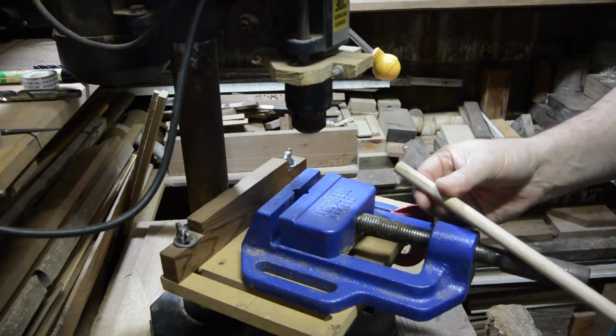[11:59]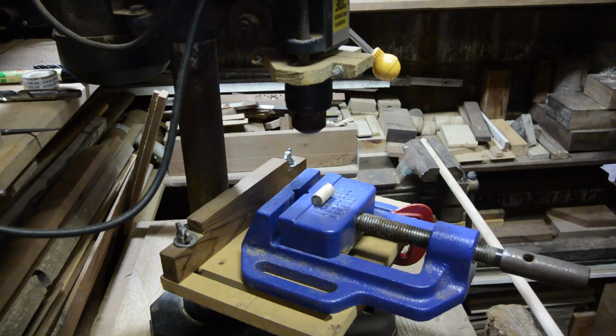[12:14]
In order to make these pivoting components, I first use a short piece of dowel into which I will drill a 5mm diameter longitudinally centered hole to make a very simple DIY jig to help with drilling holes both perpendicular and centered to the side of cylindrically shaped pieces such as dowel that will form the pivot.
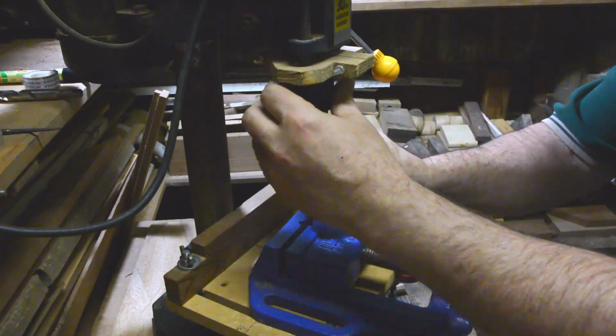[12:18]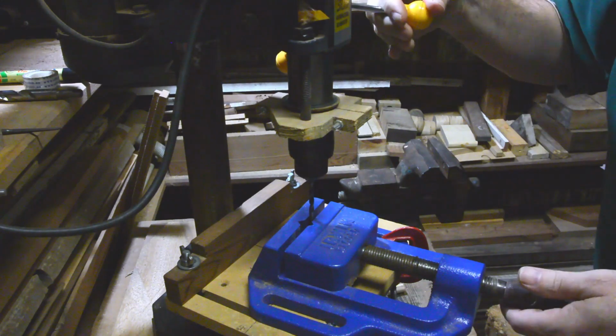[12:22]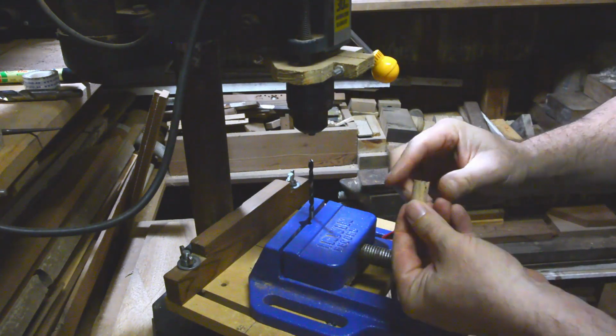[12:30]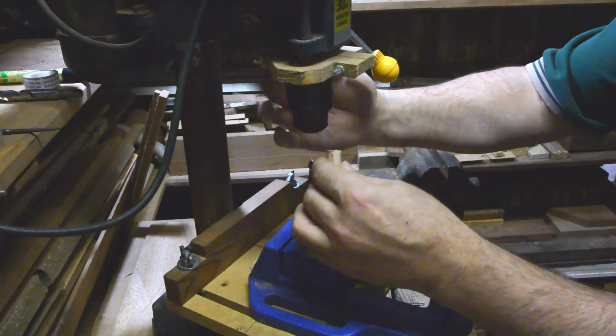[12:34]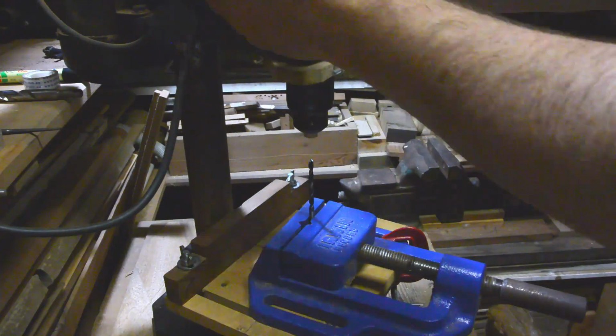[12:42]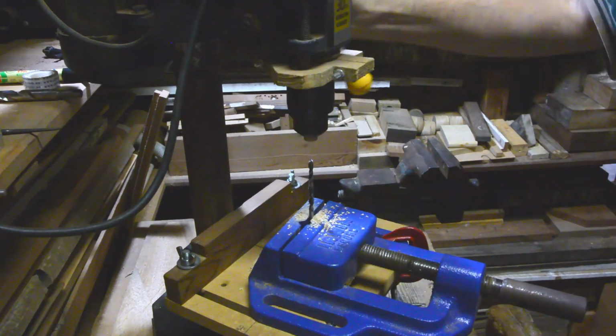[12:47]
A technique to ensure that you drill exactly vertically straight through a cylindrical workpiece is to align and hold the actual drill bit in a vise on the drill press workbed instead of in the chuck, and then insert the workpiece, in this case the short section of dowel that will be the simple DIY drill centering jig, into the chuck. This means that the spinning action of the drill chuck will ensure that the workpiece is centered and also that the hole is drilled vertically.
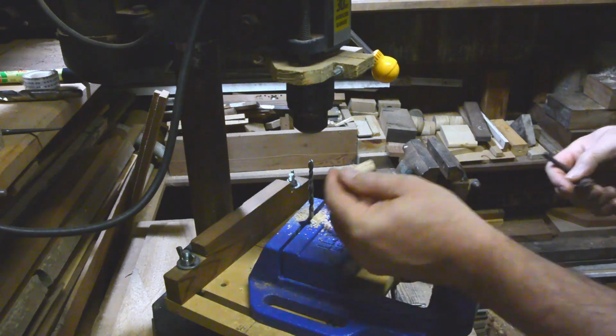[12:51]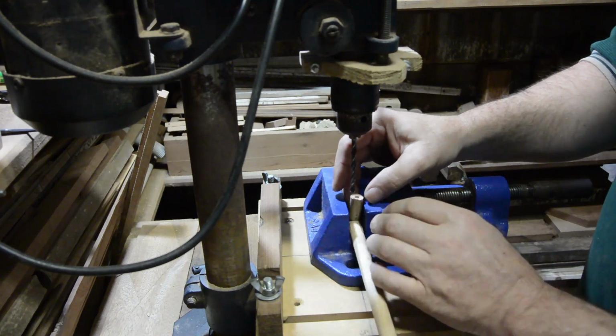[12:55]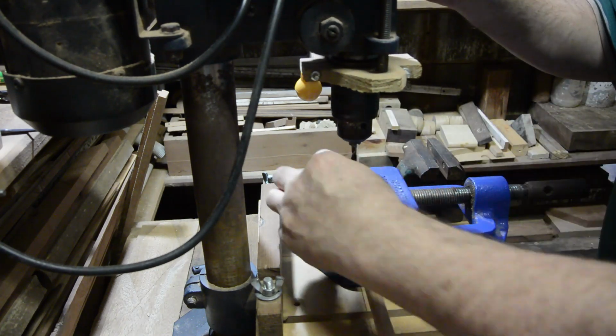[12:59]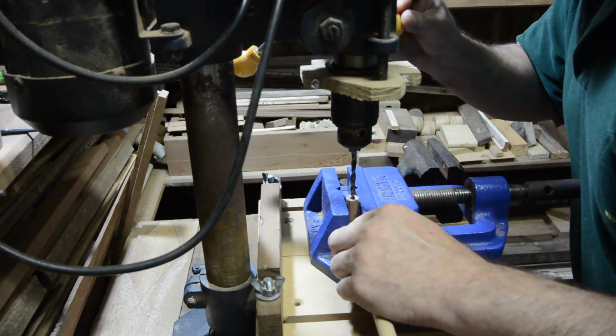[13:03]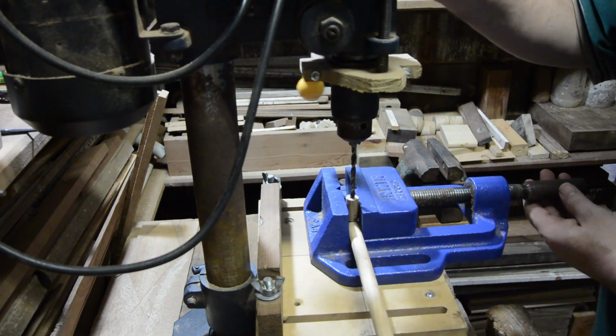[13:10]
The DIY drill centering jig, which is obviously the same diameter as the dowel to be drilled, is simply placed in the drill vise, and after securing in place and then aligning the drill bit, easily enables a perpendicular and centered hole to be drilled in the longitudinal face of the dowel. This 5mm hole will be where the jaw adjustment screw, formed from a piece of threaded rod, will be later inserted.
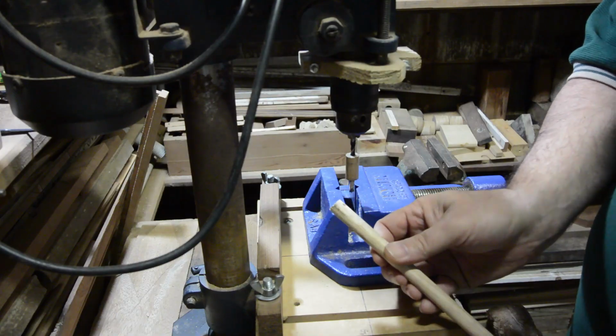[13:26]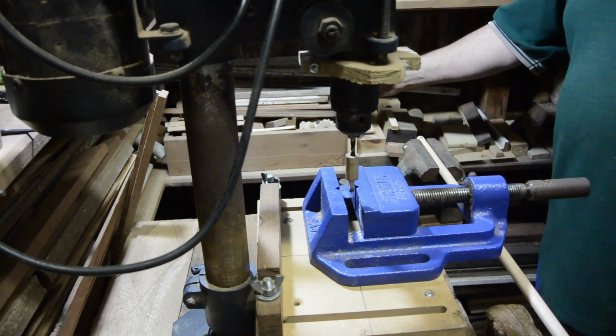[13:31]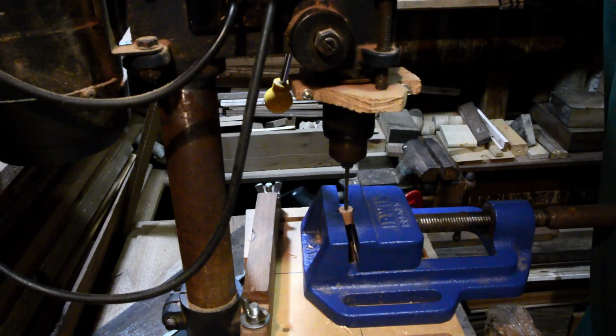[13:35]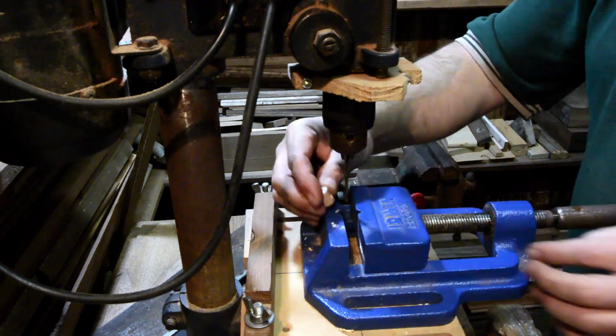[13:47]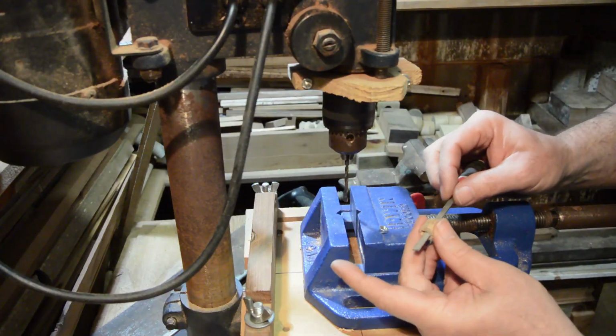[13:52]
The piece of dowel with the 5mm perpendicular hole is then cut off, and this piece will form one of the pivot joints. In order to make a robust thread within the piece of dowel that forms the pivot, a slot is made to enable a hex nut to be inserted. This just requires careful removal of the majority of the material with a couple of closely spaced holes, and then some filing to clean out the remaining material.
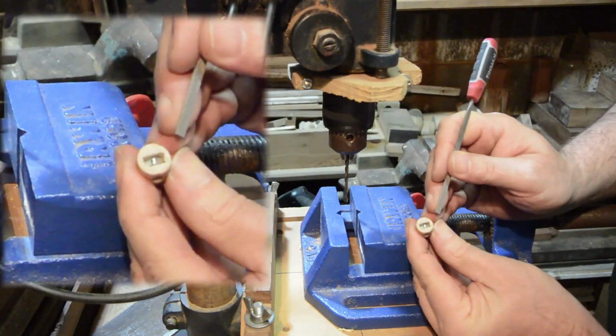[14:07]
The slot in one of the pivot pieces needs to snugly fit a hex nut so that the nut doesn't rotate, whereas in the other pivot piece, the slot needs to be sufficiently large to enable the rounded off, filed circular hex nut to rotate smoothly.
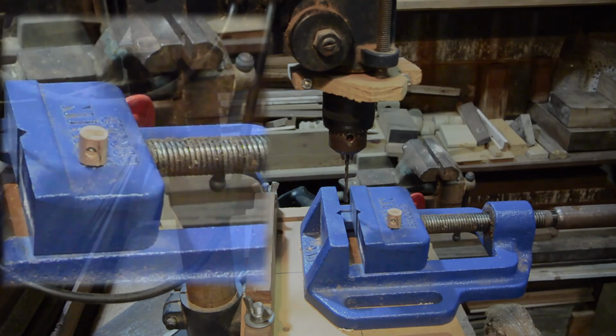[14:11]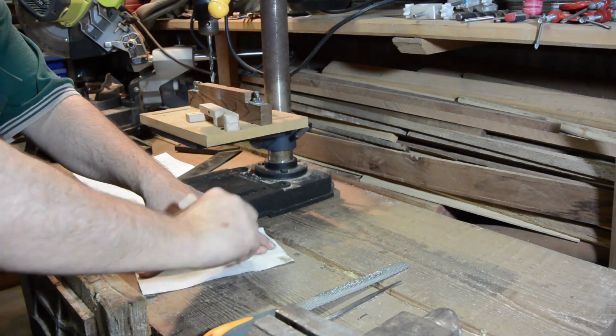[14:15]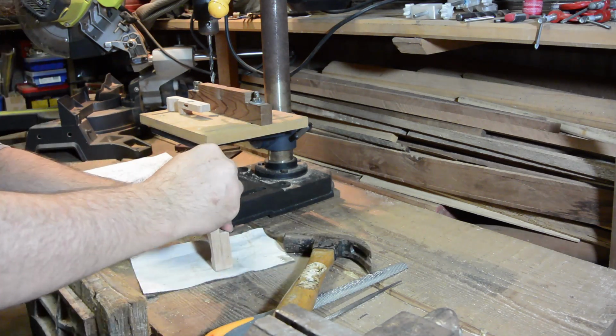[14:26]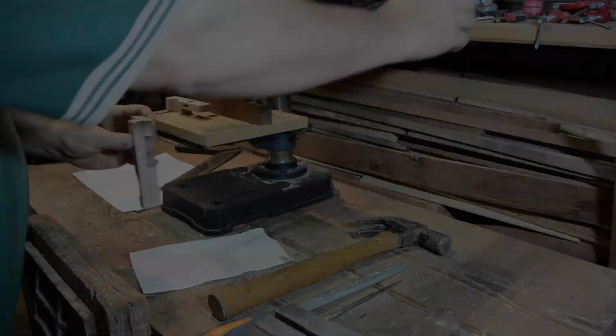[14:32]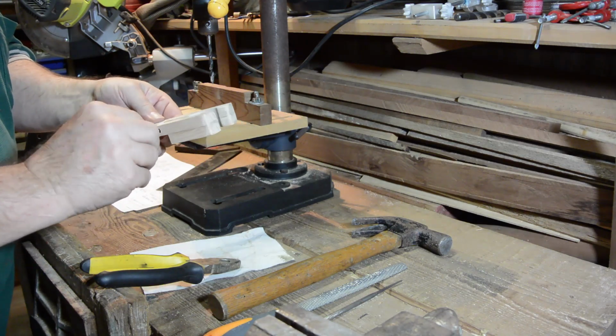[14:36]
Now for the final assembly. I sanded smooth the jaw pieces after rounding off the edges with a file, and hammered in a barbed threaded insert into the rear of the fixed jaw, into which a 6mm rod will later be placed. The barbed insert is probably optional, but again, this gives a more robust connection between the metal rod and the wooden clamp jaw.
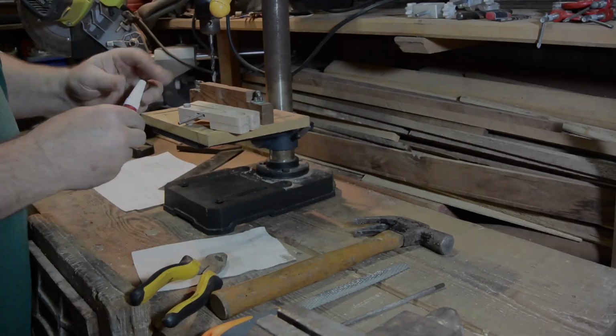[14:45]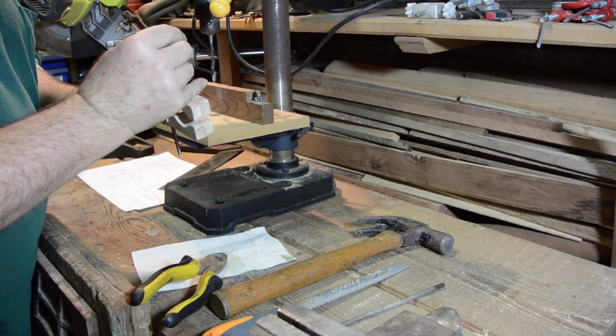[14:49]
After inserting the pivots into the jaws, the threaded rod that will form the jaw adjustment screw is inserted and screwed through far enough to leave sufficient threaded rod exposed so that later the knob can be attached. Then some Loctite or similar glue is used to fix the threaded rod to the hex nut that was previously filed smooth so that it rotates freely in its pivot.
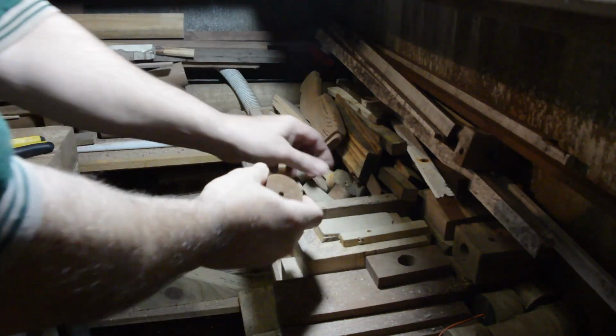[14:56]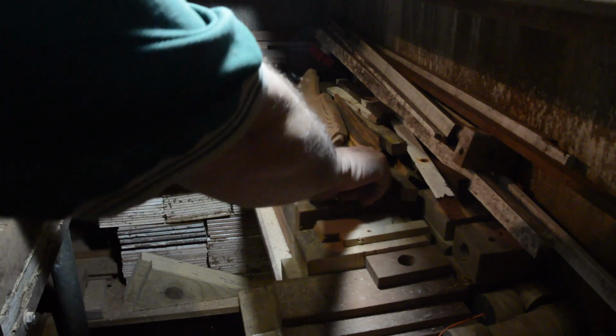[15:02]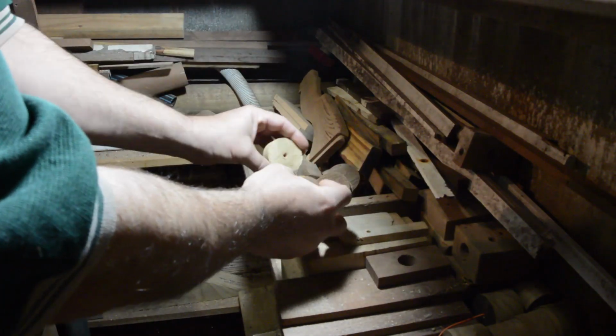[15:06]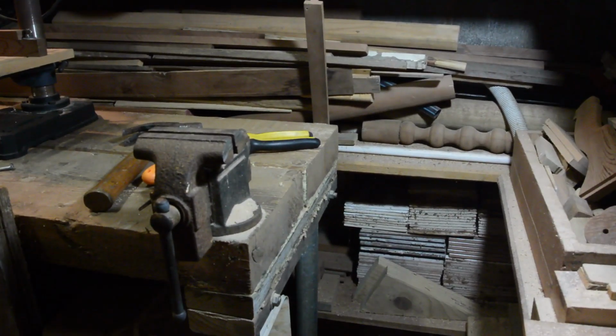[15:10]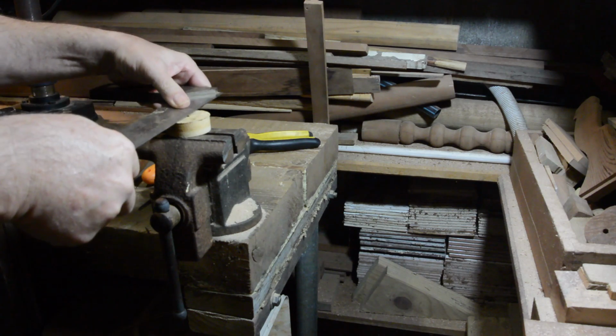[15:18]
While the Loctite was drying, time to make a knob for the jaw adjustment screw. I would normally just use a 3D printed knob to overcome my lack of woodworking skill, but in this case, for completeness in showing how to make a wooden clamp, I make a knob from a piece of material left over from drilling out holes in another project with a hole saw. Again, you can use your ingenuity and whatever material you may have available.
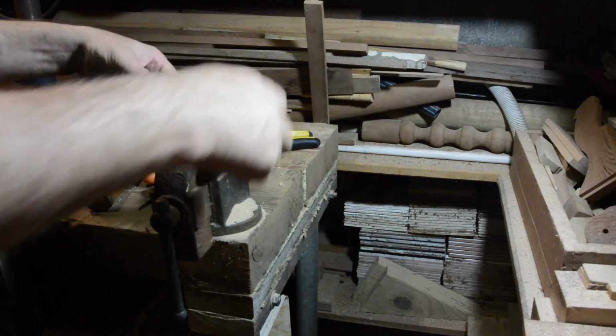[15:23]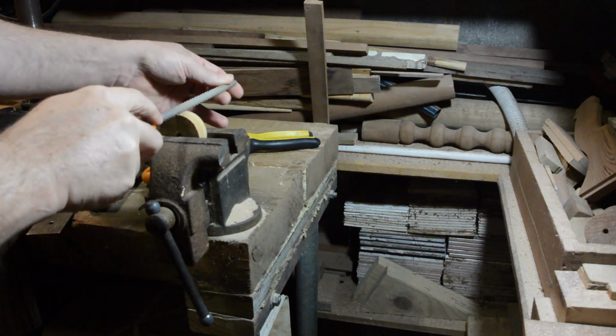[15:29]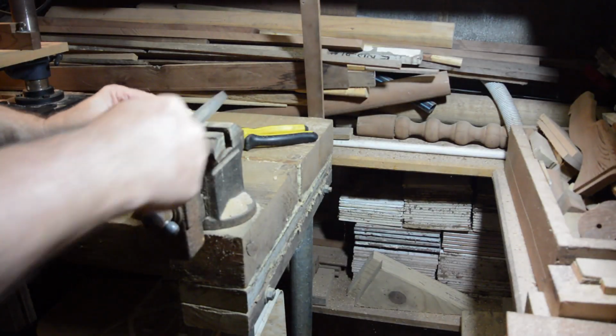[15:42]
I just marked off 45 degree sections, and using a round rasp file, filed down to approximately half the diameter of the rasp at each mark to form the knurled edges of the knob. And then cleaned off and rounded the edges. Drilled a centered 5mm hole for the hex nut and cut a hexagon shape rebate so that the nut could be glued into the knob and sit flush with the surface. It's a bit rough, but you get the idea, and you can see why I just use a 3D printer normally.
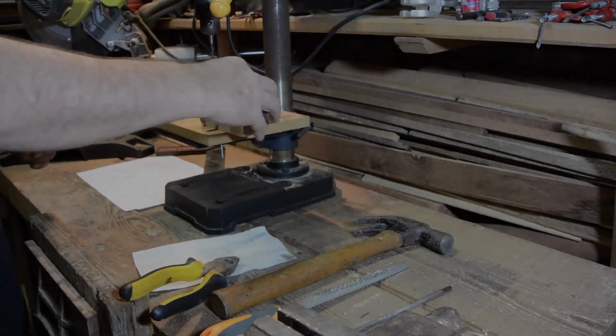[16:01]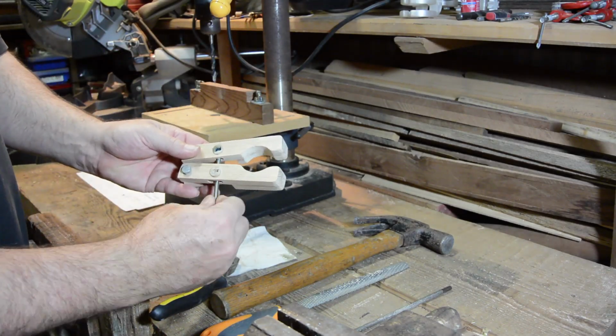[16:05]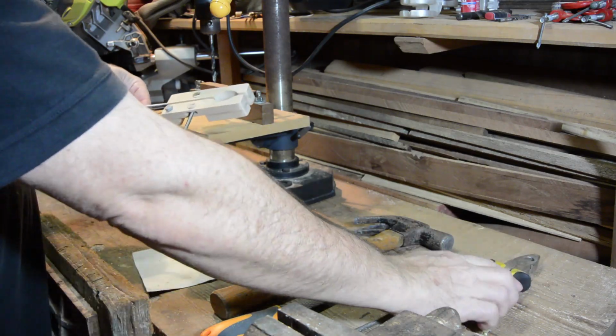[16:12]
Okay, once the glue has dried on the jaw adjustment screw, the jaw should now be able to be opened and closed. Just need to insert the rear metal rod, attach the knob, and assembly of the wooden clamp is finished.
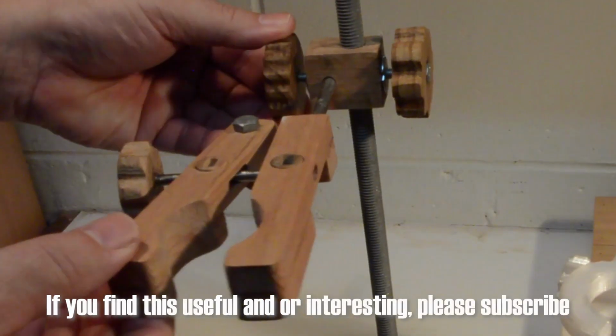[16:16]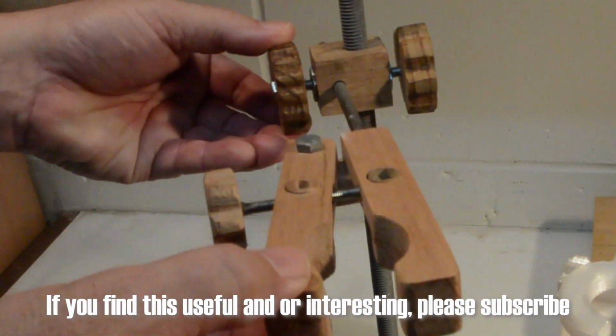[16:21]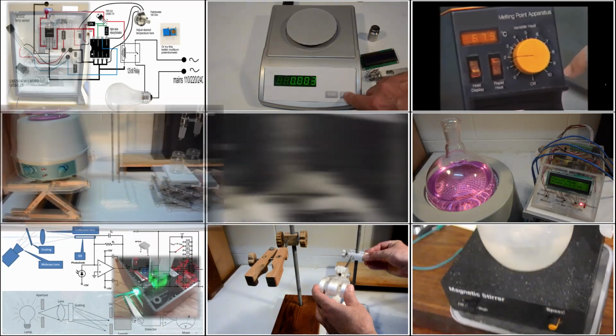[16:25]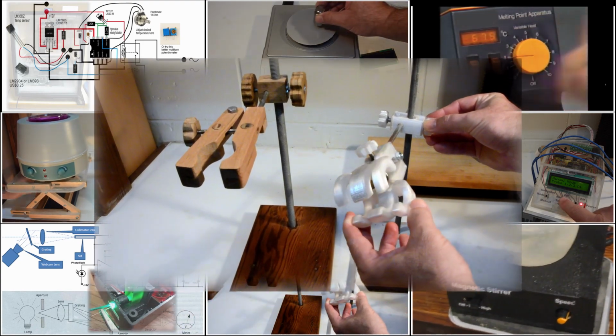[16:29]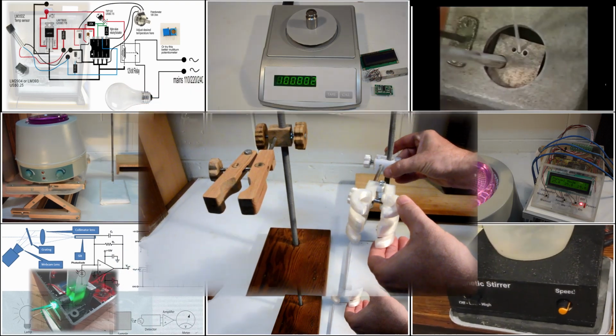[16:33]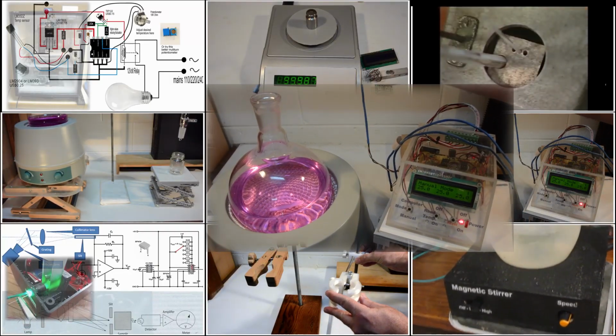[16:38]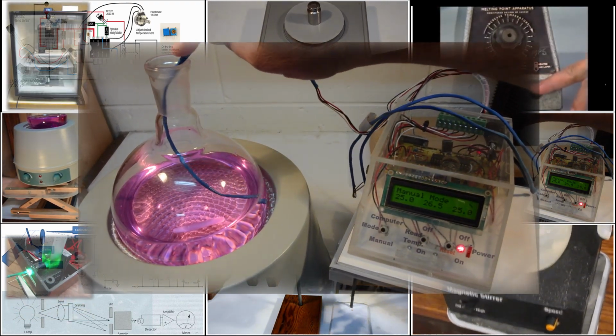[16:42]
As I said, this is the second in a series documenting the design and making of various homemade lab equipment. A number of other items have already been completed, with the next video currently in preparation for upload about a digital thermometer with up to 8 simultaneous sensors, Bluetooth control, and recording via an Android phone app.